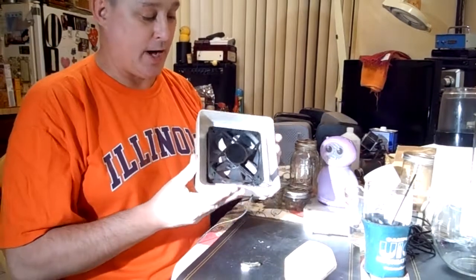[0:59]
I know I already have a video on this, but I made another one. So this is the magnetic stir plate on the cheap.
So you have to order a magnetic stir bar. This one is made out of Teflon and it has two magnets in it on each side. This is food safe, it's neutral, it's made out of Teflon so you can run it. Like I mix Kool-Aid in my magnetic stir plate. You can use this for chemistry or making your own e-liquid if you vape. So this is a very cool tool to have.
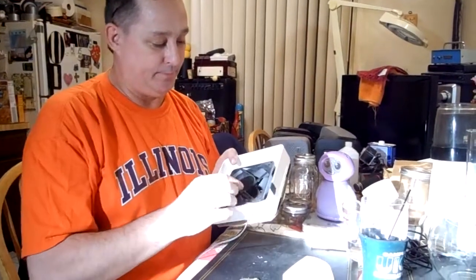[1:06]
Now, the ingredients for this, of course, you need the magnetic stir bar. You need some sort of a DC or AC power supply. I used a little switch. The chassis, I got some old placemats that I used on mine. Two rare earth magnets and then a larger rare earth magnet. This came out of a hard drive. This is a big, powerful, heavier one. And then this is a little plastic tray. You could use any kind of box, a cardboard box, a cigar box. And then a computer fan. I have a switch here to turn it on and off, and that's about it.
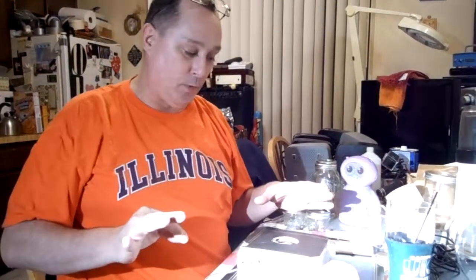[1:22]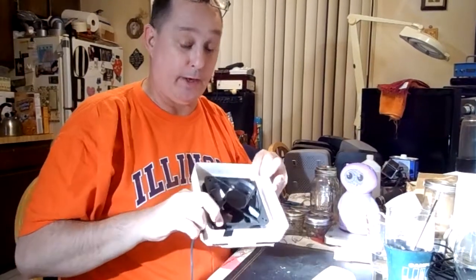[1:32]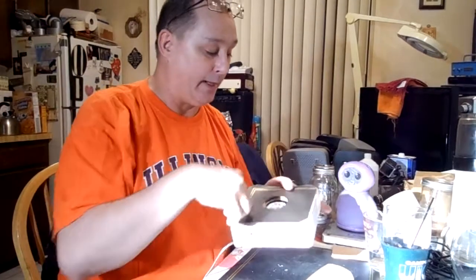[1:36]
So as far as the construction, I took the box. I eyed it out. It looked like it would really work well for this size. It was the right height. And you put a cross with a Sharpie and then laid the fan down and centered it on those lines. Use the drill to the fan as a guide, because there's these holes where you mount it up, and then I used some PC screws that were for the fan to mount it in.
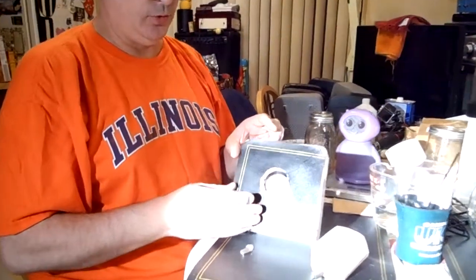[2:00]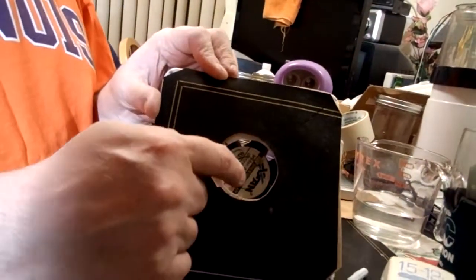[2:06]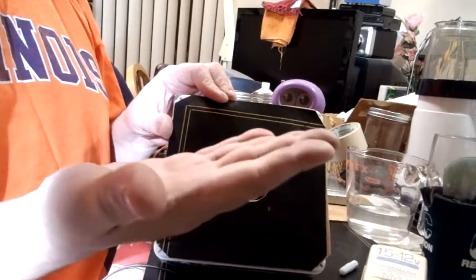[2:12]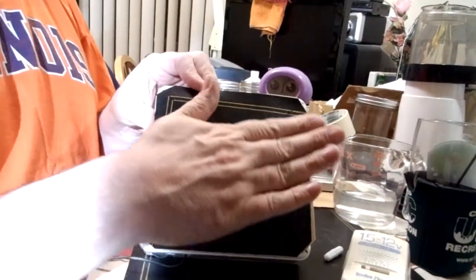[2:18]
Now mine, I know a lot of guys will not drill this big hole. You don't have to. If you lower the fan, you just have to have clearance because you're using hot glue or epoxy, whatever your glue of choice is, to affix this magnet to the spinning part of the fan, the center. Okay? So if I were to just bolt this right on here and I didn't cut this hole out and I glued these magnets on here, they would be scraping on the bottom of this. So to get around that, you could put a couple washers on each thing and drop the fan down, or you could just cut the hole and have the magnet stick up.
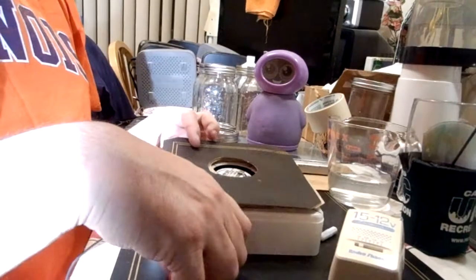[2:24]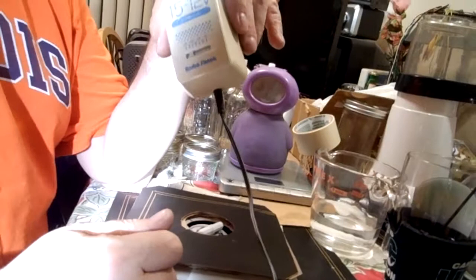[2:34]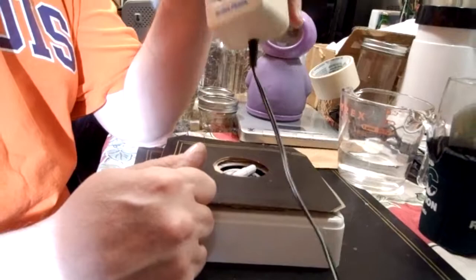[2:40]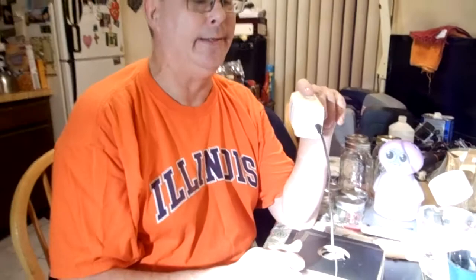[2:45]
And then as I went, I quickly realized that with getting it to spin, a lot of guys will build a voltage regulator circuit. You can get these PWM controllers, which is really the way you want to do it. It's a pulse width modulation circuit. You can get voltage regulators. You could use a dimmer switch. Any way you can reduce current. The LM317 circuit, I played around with that. I ended up thinking that just using this was enough, and I removed the LM317 circuit.
And this is just a Radio Shack multiple voltage adapter. It runs 1.5 to 12 in steps of 1.5, 3, 4.5, 6, 7.5, 9, and 12 at 300 milliamps DC output. And there's a little switch here.
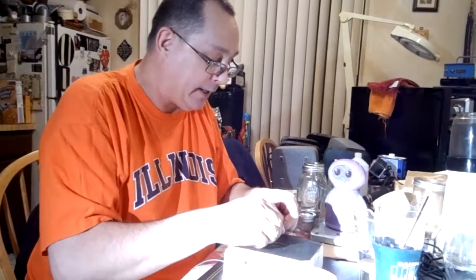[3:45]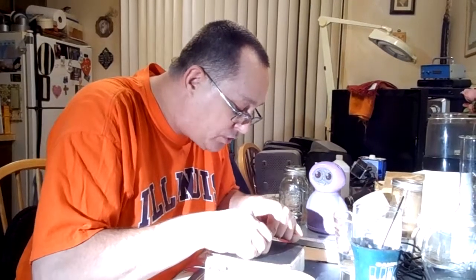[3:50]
So what I found was if you ran it at the full 12 volts, it would go so fast that these weak magnets couldn't spin this fast. This didn't want to spin fast enough. So it broke free and it would sit there instead of spinning and rotate like this from the magnetic field. So when I added this heavier duty, stronger magnet into the equation, you just place this on and you center it. Adding that magnet made it a stronger pull to make sure that this didn't do that rotating thing.
So if you're going to make one of these on your own and you're going to order the magnets off eBay, get the 5mm circle ones that are maybe 3 millimeters thick, or some substantial magnets, or even something like a big bar. But what I'm saying is, if you run into issues where it's not enough and your bar is spinning in place rather than spinning in a circle, that's what you need to do, is up the power of the magnet or lower your voltage. So it's kind of a balancing act between all of that.
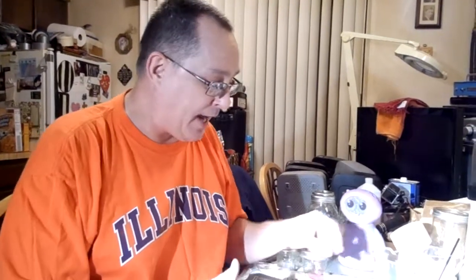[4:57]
When I added this magnet into the mix, it became too tall. So I cut a piece of cardboard here, a piece of cardboard there, another piece of cardboard there, and then I used 3.5-inch masking tape to tape it all together. Then I folded a placemat. I cut a placemat in half, folded that, cut these holes in it, and then glued that down here. So it sits pretty high now.
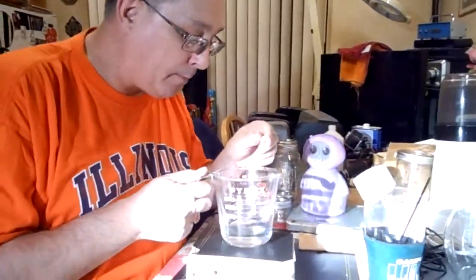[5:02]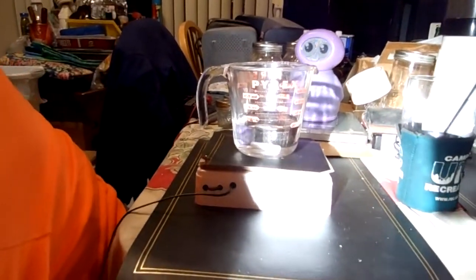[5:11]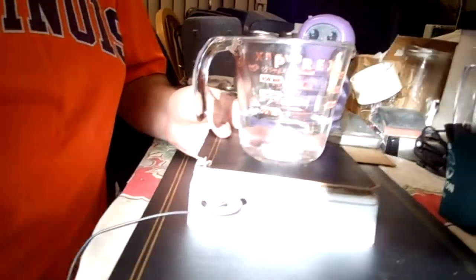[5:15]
Here's a Pyrex, and we've got the magnetic stir bar. I'm going to set this on here kind of in the middle and drop that bar in here. Plug this in, setting on 3 volts, and hit the switch.
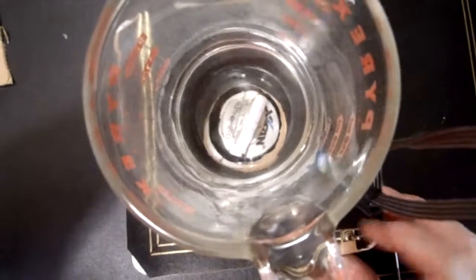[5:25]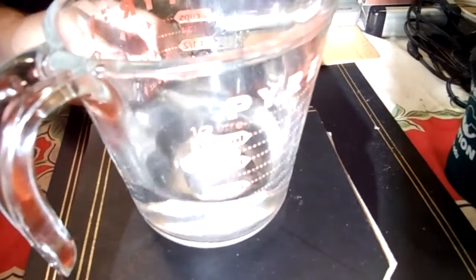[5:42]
So as you can see, why don't we go ahead and turn that on again, and we'll try upping the voltage. We'll see if we can get this thing to go squirrely. Actually, would you take the camera again? I'm going to remove the main magnet, and then I can get it to go squirrely, no problem.
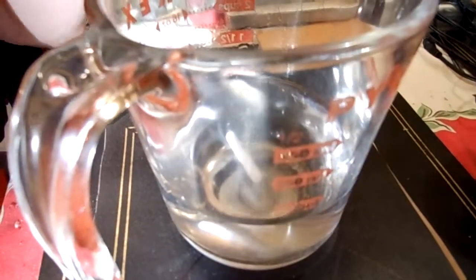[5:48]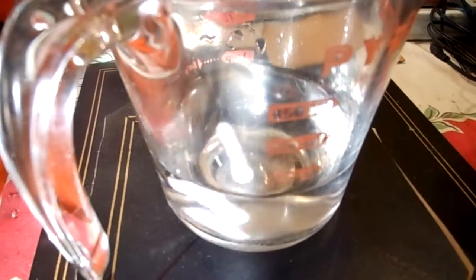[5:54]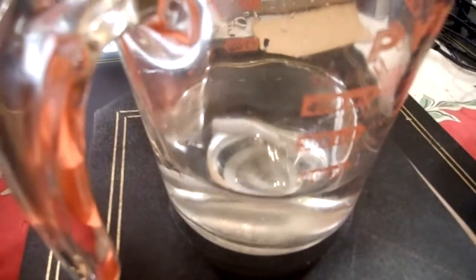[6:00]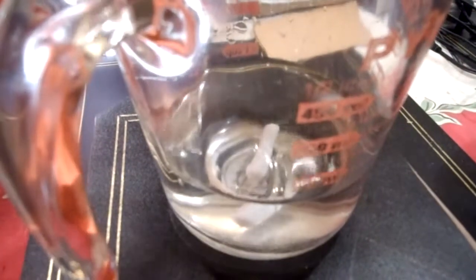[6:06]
So see, now even at 3 volts, it won't stay on. 3 volts is too much speed for it. And that's the thing with one of these. The natural speed of the fan might actually even be too much for what you need. It depends on the viscosity of your liquid and how much liquid you have. If I fill this up to the top, it's going to be more pressure on that thing.
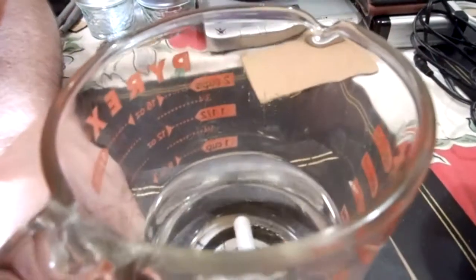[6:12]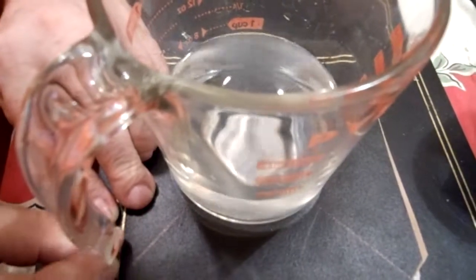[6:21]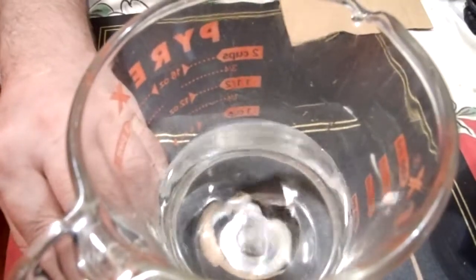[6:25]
Now watch this. See how I'm pulsing this now, and it's not breaking free. We're pulsing it, it's at 3 volts. You can hear me clicking the switch on and off. So that PWM switch, that pulse modulation, that's what that circuit does. They say it's pulse width. Well, it's basically turning the switch on and off.
So you could build an oscillator that's a square wave oscillator. If you set that at a low frequency, that would probably run this. It depends on the output voltage. I'm not sure about running motors off of an oscillator, but I know that they have PWM motor controls. Those circuits are what they're for. So your options are get a bigger magnet, lower the voltage, or you can get the LM317 voltage regulator circuit.
Really the best would be, I would like to put the LM317 circuit back in here and have it utilizing this. So no matter what, if I wanted to have some glue with gravel in it and stir that, I could work my way up and have a lot of power behind this and then run that PWM so it'll run. Maybe that's a little extreme, but you get what I'm saying. I don't necessarily want to just use this for one thing. So, yeah.
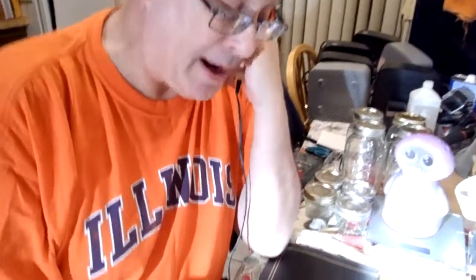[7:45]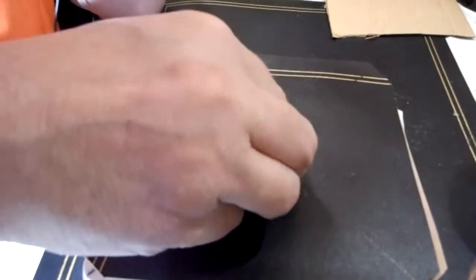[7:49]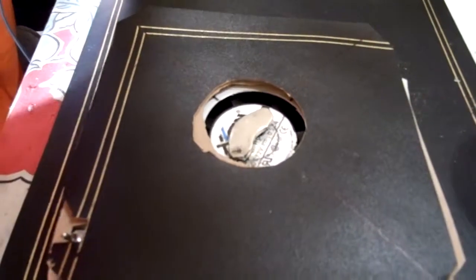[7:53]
It's basically a balancing act between how strong your magnet is and the strength of your stir bar, and they sell them. See, that's the thing. The stir bar, that one was like $5.85. So I don't really have a collection of them. You could just take a Bic pen, a biro, cut it into, let's say, 50 millimeters, and then cut a 40 millimeter dowel rod or whatever, and then take two 3 millimeter magnets, put one in each end making sure those poles are reversed, put the dowel in between them, and then seal it up with hot glue.
Now, I wouldn't want to use that if you were doing chemistry and you don't want to contaminate your substrate with plastic, because some of that stuff matters. You're only supposed to use stainless, glass, or Teflon. You can't use plastic, so just be mindful. But if you were just using it to make e-liquid, you could very well make your own. And those rare earth magnets are cheap on eBay. So this is a cool little project you can do.
And like I said, if you run into it spinning and breaking away from you, it's a balancing act between the current, how much voltage or current you have, and the strength of your magnets. So I hope that was useful for you.
There's another video on this channel where I made the first one back when I was vaping to quit smoking. I was a pretty bad smoker, and I vaped for 1 year. And we made our own e-liquid here. My wife helped me out with that. Thank you, Dana. And I was able to stop smoking. I do not miss it. How long has it been? 3.5 years since I had any nicotine. So the magnetic stir plate was a huge part of me being able to make my own e-liquid, and it's a very cool tool to have.
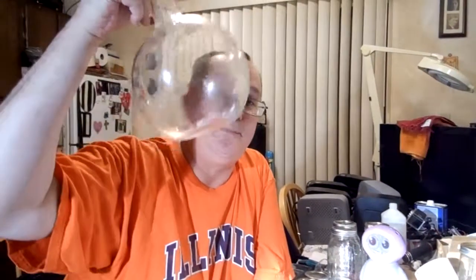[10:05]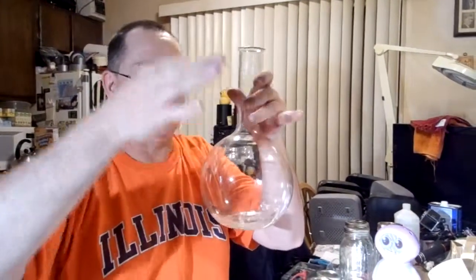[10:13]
And you know what? There was another video I uploaded today called Bongnado, where we had this thing full of water. We ran it up at like 7 volts, and it made this cool little tornado vortex inside of here that we filmed, the Bongnado. So check the Bongnado video out. That should be up here too.